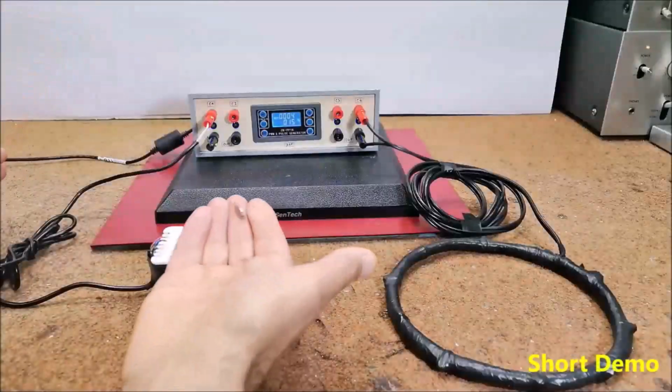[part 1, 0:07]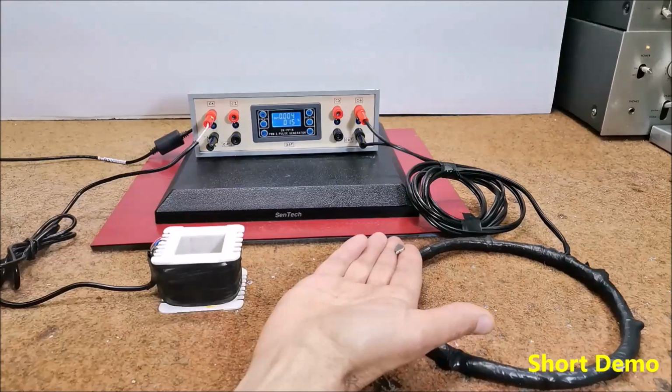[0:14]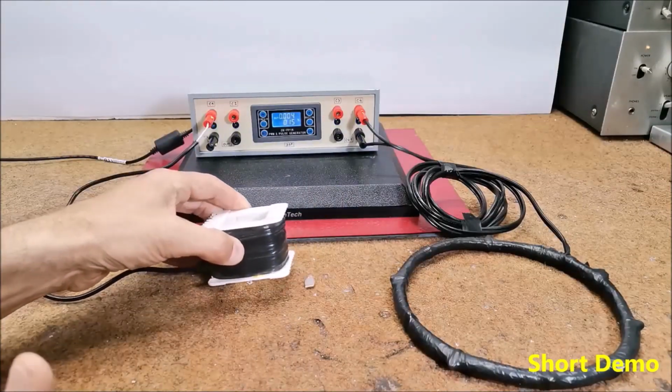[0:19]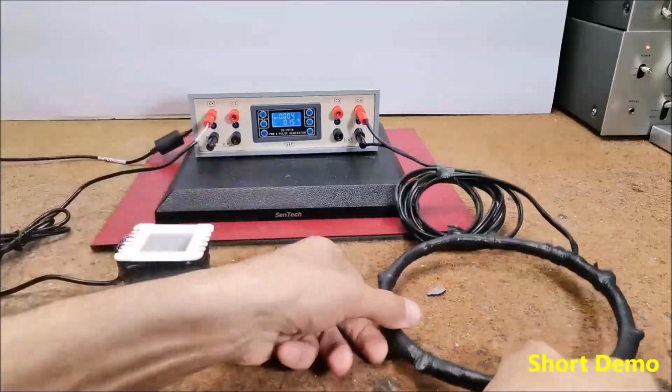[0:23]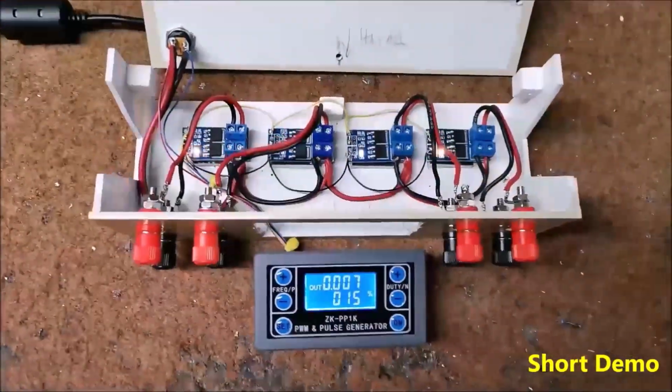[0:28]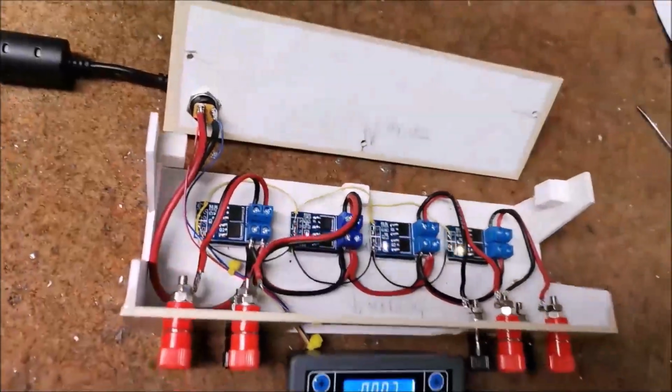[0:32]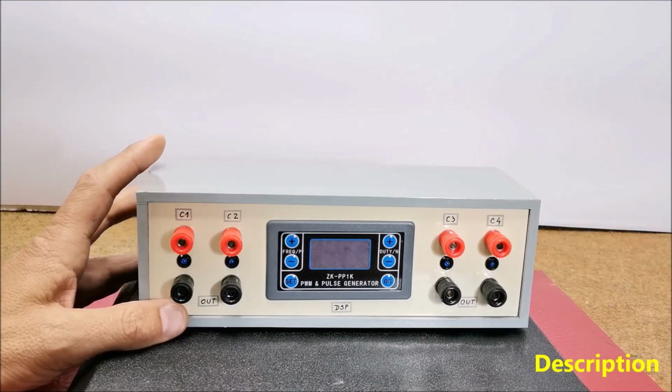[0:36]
PEMF therapy, or pulsed electromagnetic field therapy, is a type of therapy that uses electromagnetic fields to promote health and well-being. PEMF therapy is based on the idea that electromagnetic fields can influence the cells and tissues in our bodies. Exposure to these pulsating fields can stimulate cellular activity, improve circulation, reduce inflammation, and change tissue repair and support
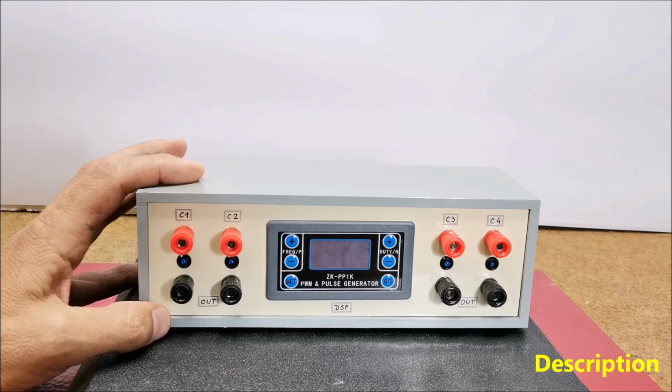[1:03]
overall healing processes. This therapy has been used for various purposes, including pain management, promoting bone healing, improving sleep quality, reducing inflammation, enhancing wound healing, reducing the effect of stress, improving blood oxygenation, and much more.
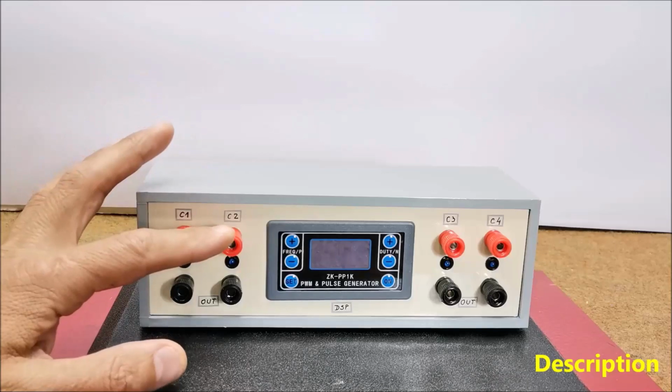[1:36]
In several of my previous videos, which you can view in the given playlist, I describe several simple ways of making such devices. This time I will describe a simple way to make a multi-channel PEMF device that is used to make a special therapeutic bed or therapeutic chair.
In this case, the coils are placed inside the mattress, usually distributed in three or four different places, so that when we lie down or sit down, the whole body is exposed to magnetic radiation.
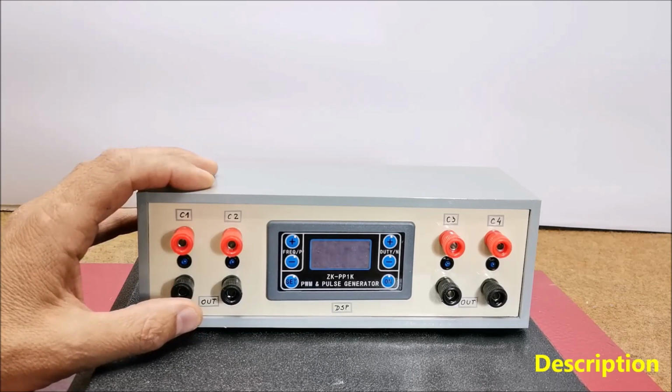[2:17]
The device is very simple to build and contains components that are easily available online and are also very inexpensive. The electronic part, without coils and power supply, costs about $10 total. I used ready-made modules for construction, so it can be made relatively easily by builders who do not have extensive knowledge in this area.
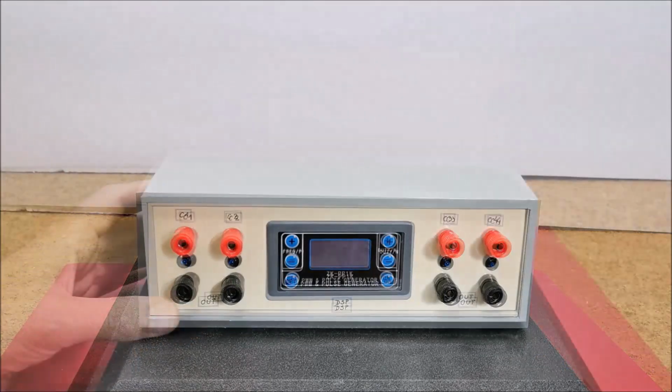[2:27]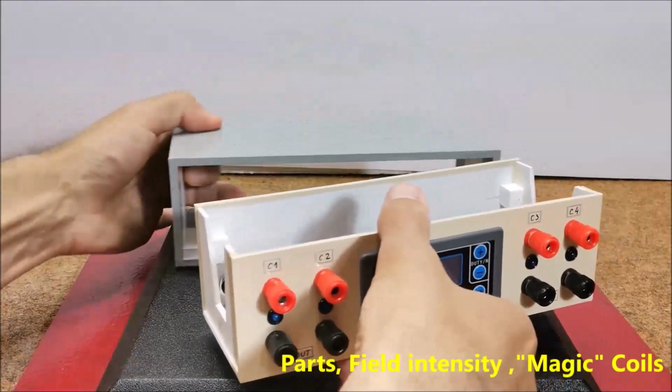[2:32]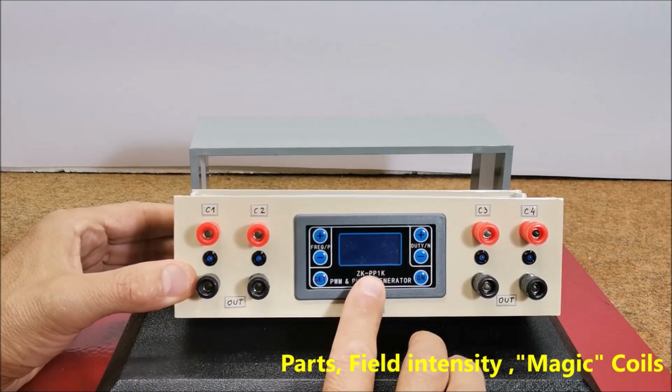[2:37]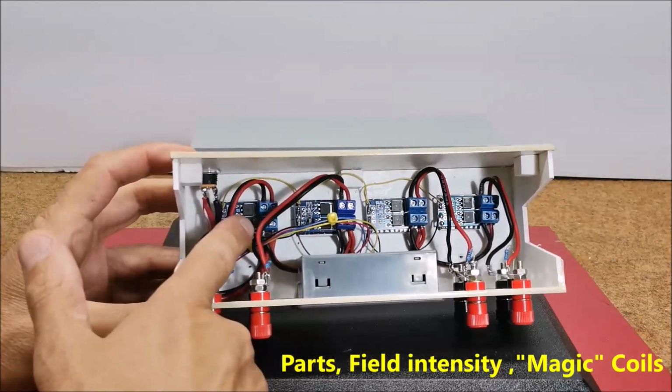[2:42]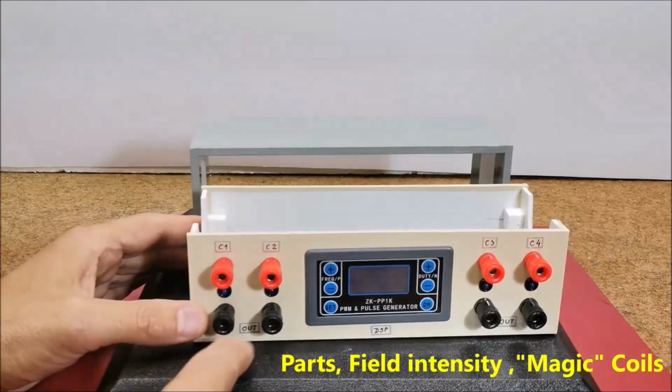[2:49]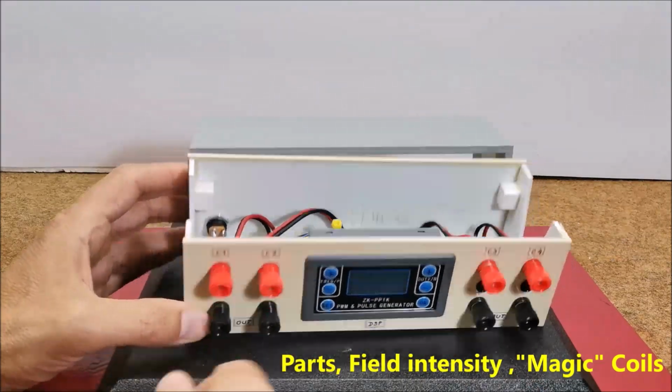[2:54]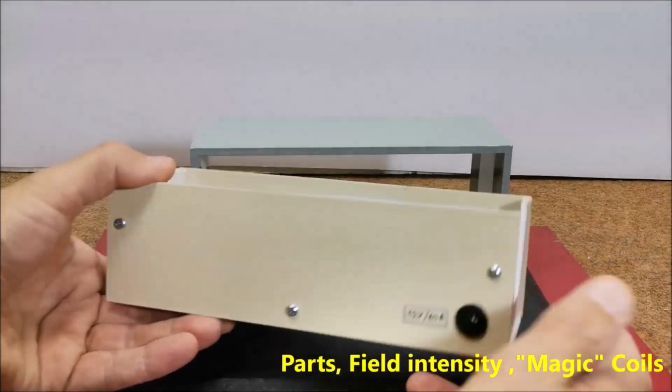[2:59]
The device contains several components. ZK-PP1K signal generator module, high power MOSFET switch driver module, one for each channel. Four coils should be connected to these outputs, and a power supply of 12 volts, minimum 10 amperes. A power supply from a PC can be used for this purpose.
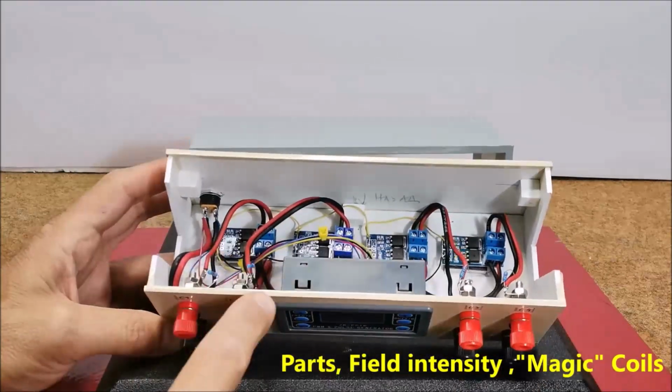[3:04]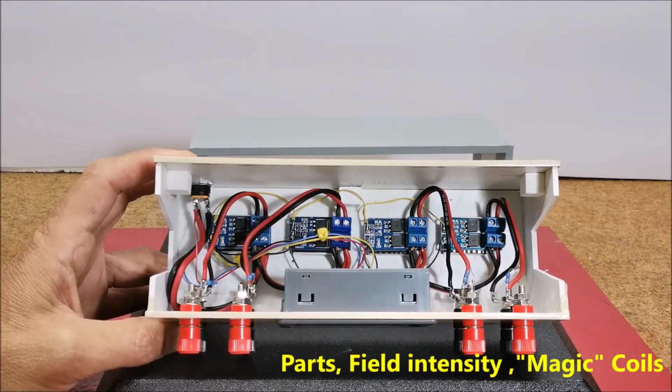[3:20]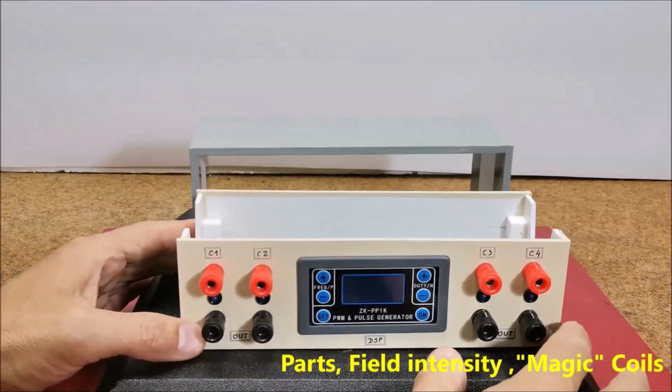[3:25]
The modules are interconnected with a conductor with a diameter of 1.5 mm or more due to the large current that passes through them, while the diameter of the wire for the pulsating signal that is brought to the inputs is not important. I'm using a 12 volt 4 ampere power supply for this demonstration because I will only connect one coil at a time. In real conditions, all four channels would be used, and it is cheaper and more practical to use a PC power supply.
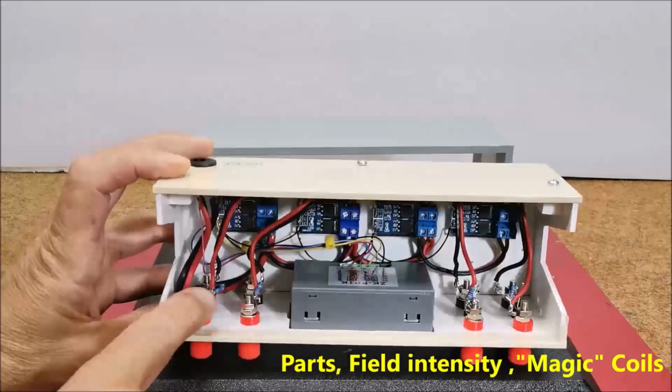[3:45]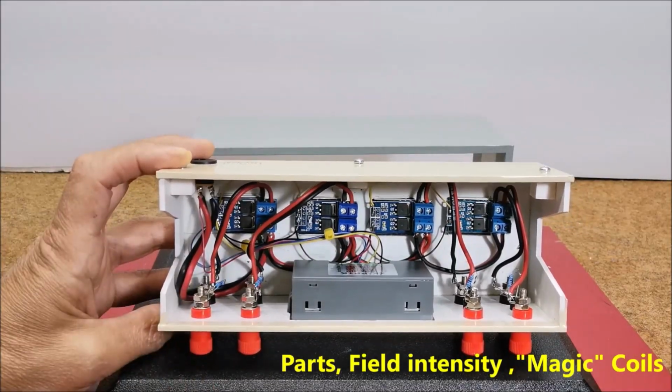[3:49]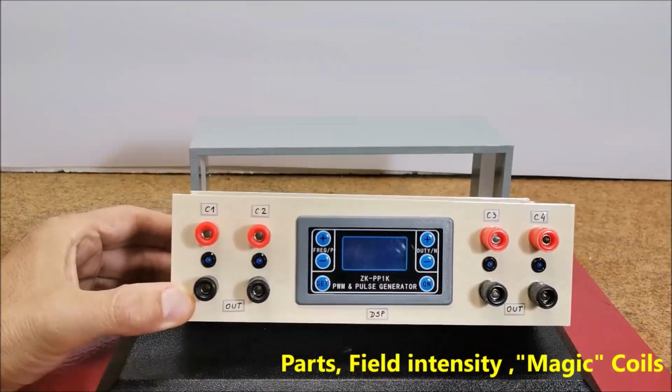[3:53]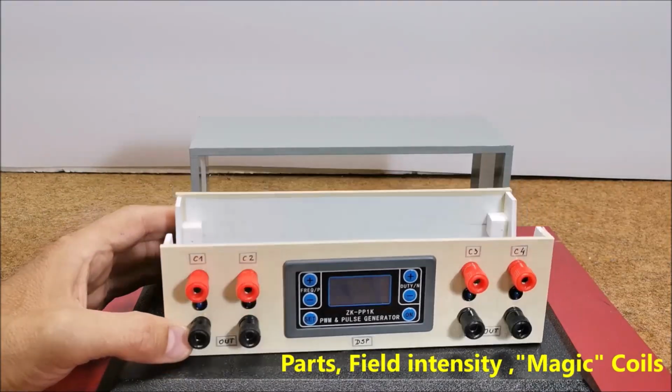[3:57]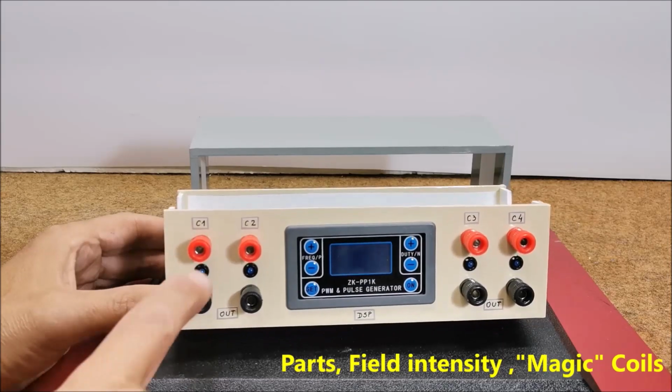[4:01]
At the output of each channel, I placed an LED diode that signals whether the channel is functioning. These diodes can be freely omitted.
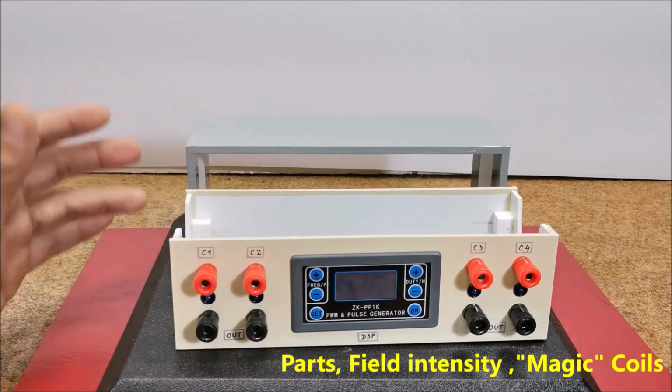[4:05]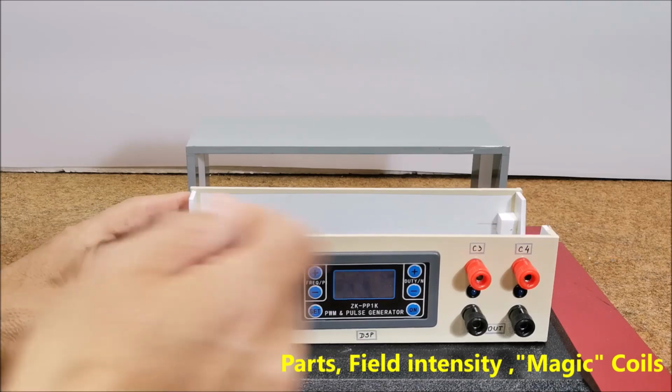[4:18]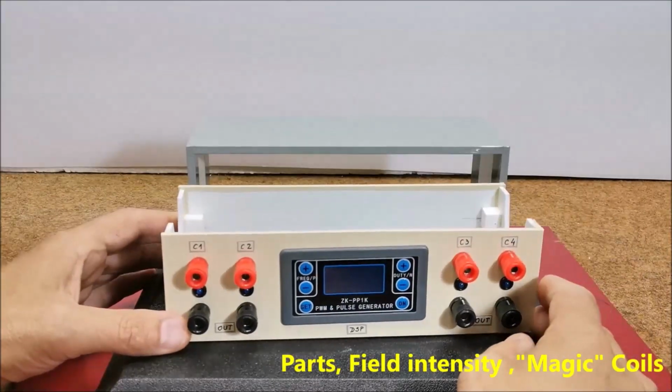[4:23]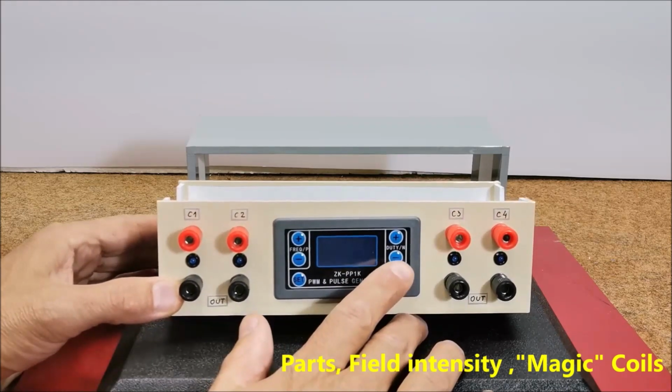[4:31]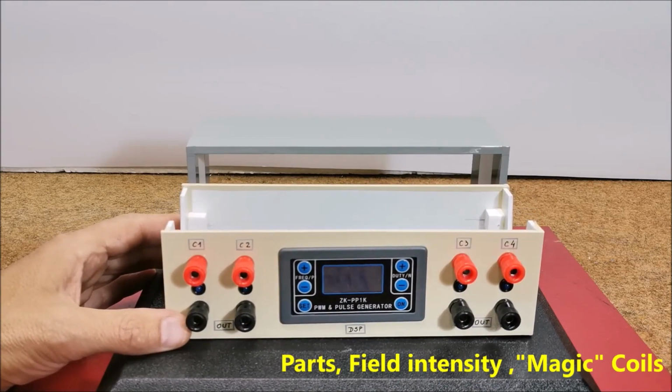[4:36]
In the appendix at the end, you can see that there are two similar circuits. In one, a potentiometer has been added, which can be used to continuously regulate the flux from zero to maximum. In my practical device, I have omitted the potentiometer for simplicity, and the intensity of the magnetic field can be partially changed by changing the duty cycle in the range of 5 to 30%. Otherwise, the standard value of the duty cycle should be around 10%.
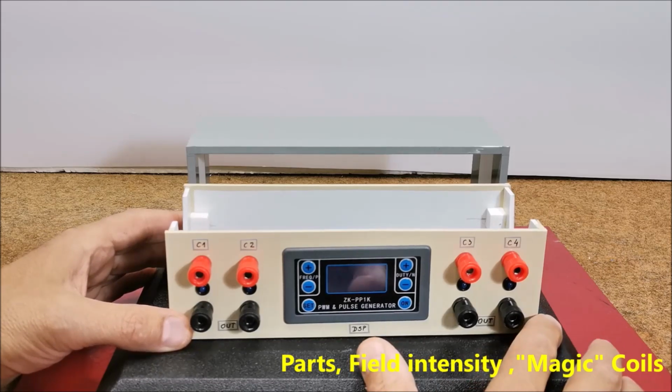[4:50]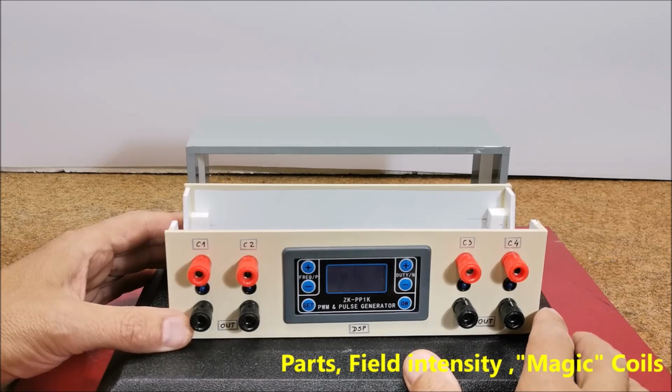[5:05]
I would like to suggest a very important note. Very often on my channel I receive requests for advice on how to make a PEMF device that would output a very strong magnetic flux of 200 Gauss and much more. According to NASA's extensive research in this therapeutic method, the best results are obtained at magnetic flux in the range of 0.1 to 4 Gauss. By increasing the strength of the flux, the effect of the therapy remains unchanged. So the rule "stronger magnetic field, stronger therapy" does not apply here. In this device, the magnetic flux strength is between 10 and 20 Gauss per channel, which is more than enough.
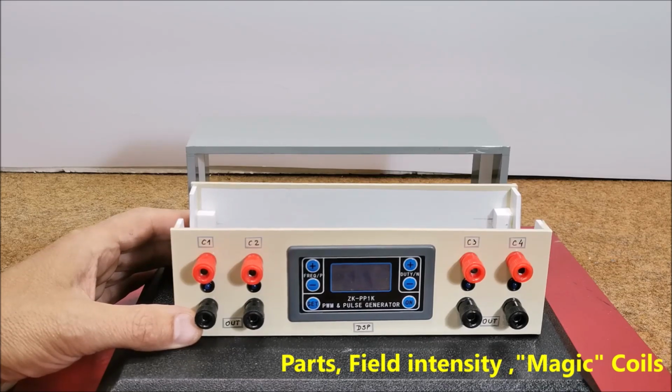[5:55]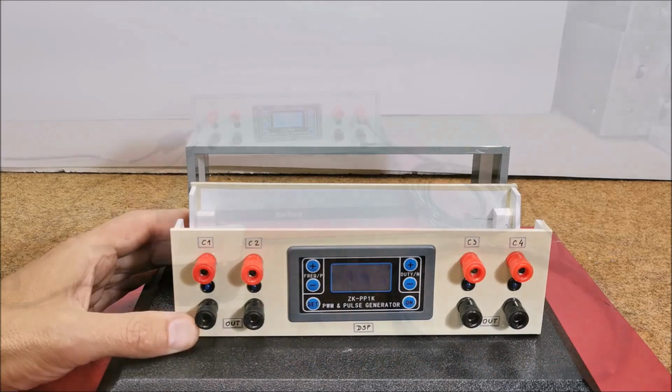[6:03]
Also, various exotic coil shapes with magical properties are definitely a scam, and avoid even reading about them at all. I still can't believe that they are sold at fantastic high prices. Unfortunately, it is a fact that there is a great demand for this type of coils, but only by people who do not understand the way this therapy works. Sellers invent countless silly theories to try to convince you of the effectiveness of their product.
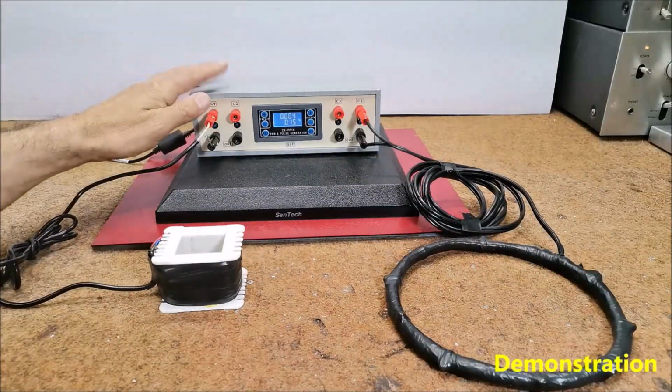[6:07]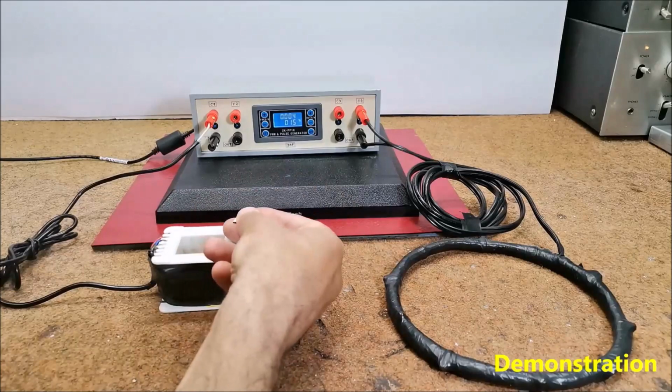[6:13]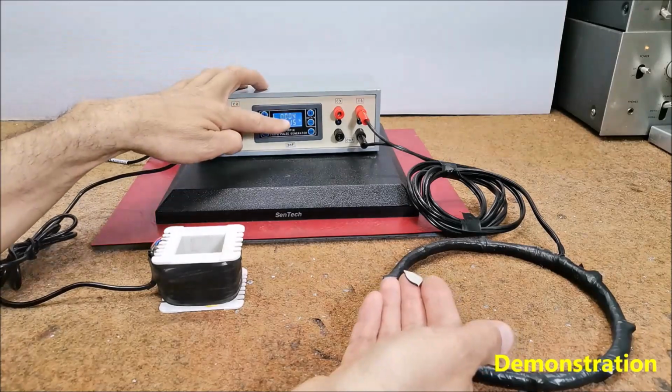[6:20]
We can test the functionality of this device, as well as other such devices, using an ordinary small magnet. If we bring the magnet closer to the coils, and if the device works, we should feel vibrations with a frequency set by the signal generator module.
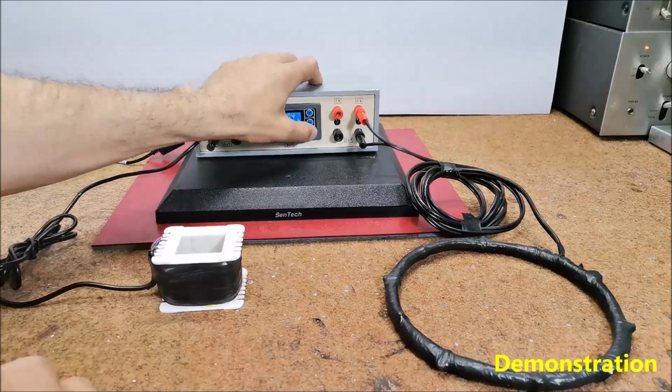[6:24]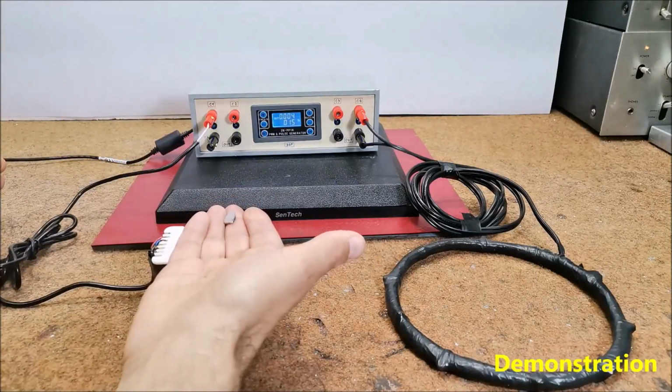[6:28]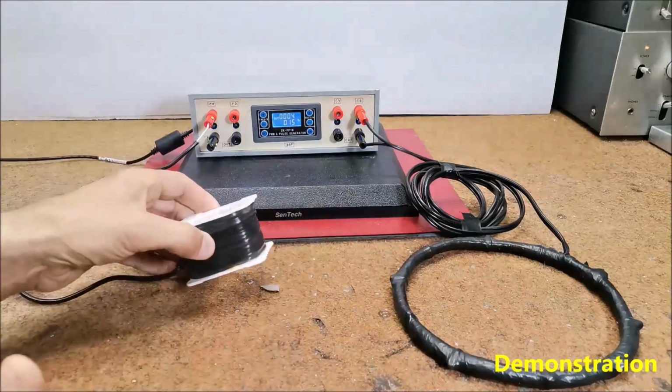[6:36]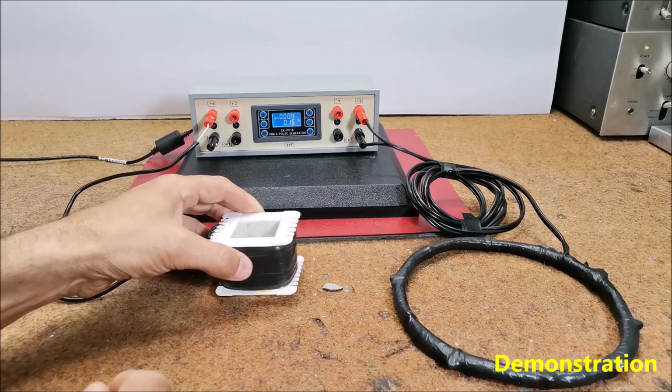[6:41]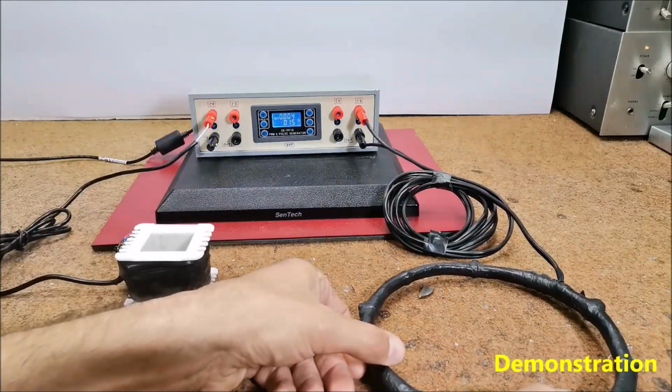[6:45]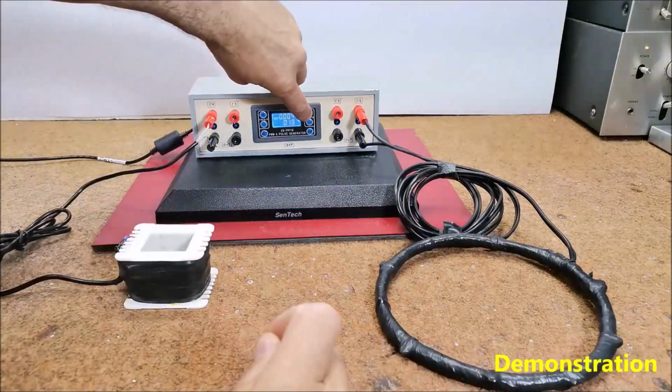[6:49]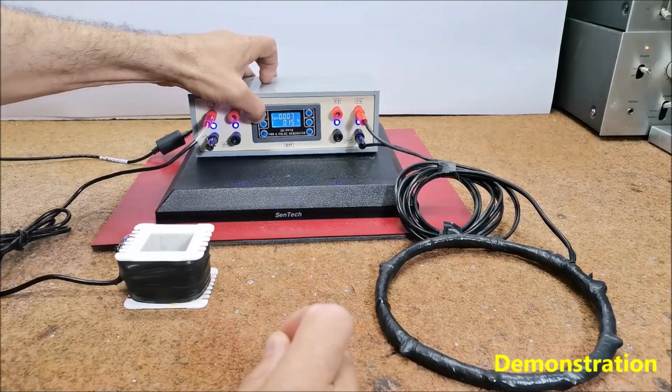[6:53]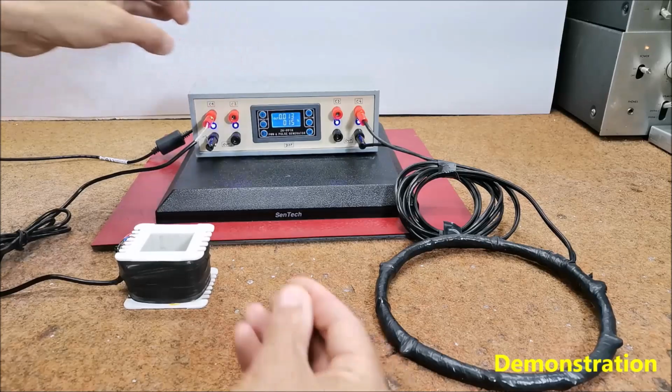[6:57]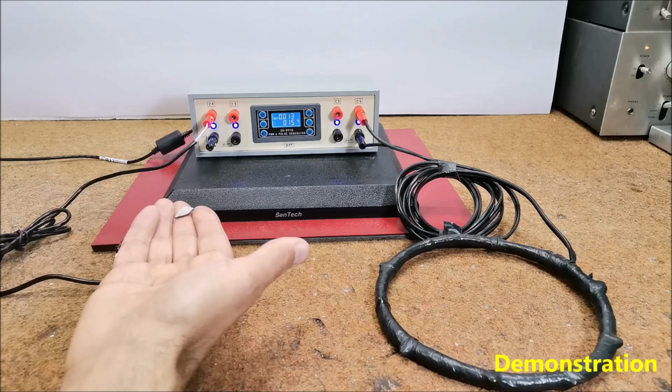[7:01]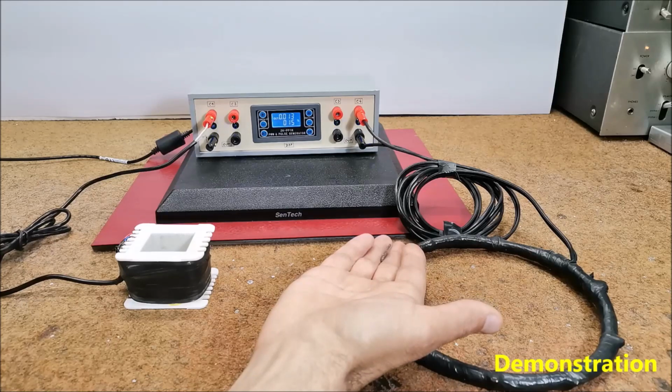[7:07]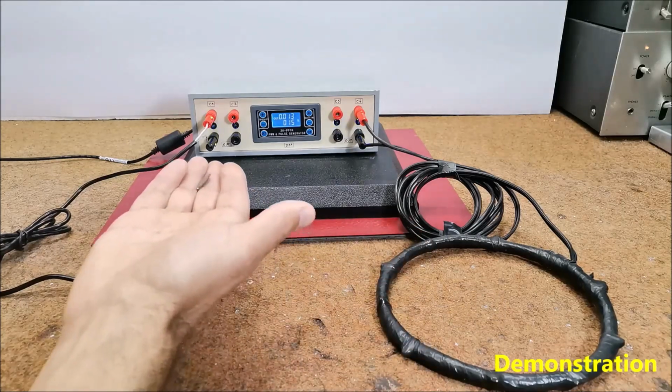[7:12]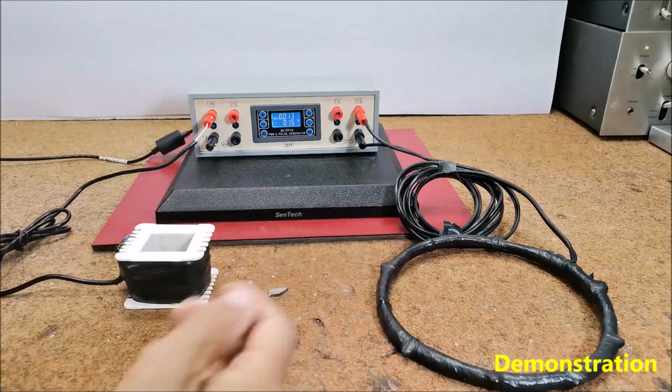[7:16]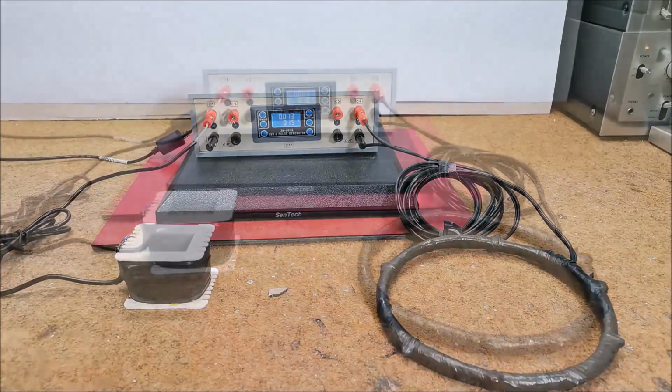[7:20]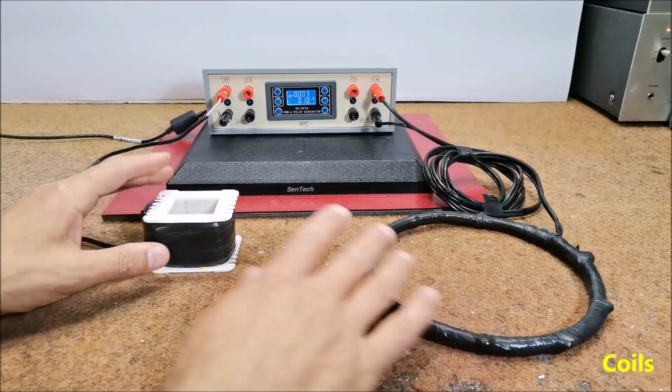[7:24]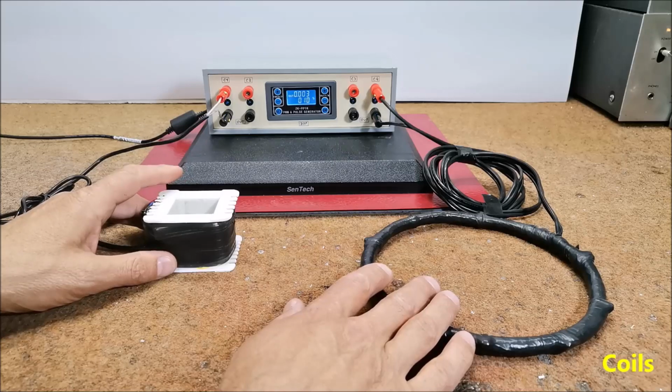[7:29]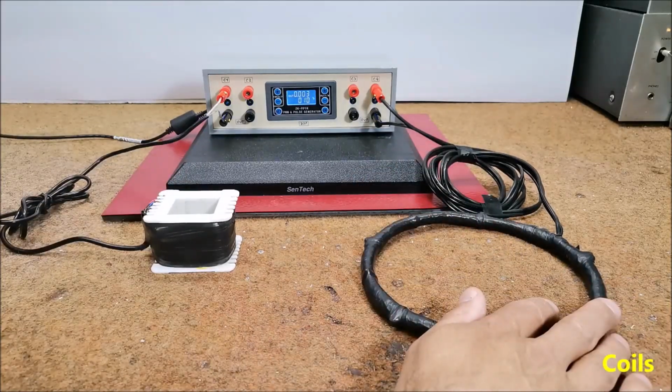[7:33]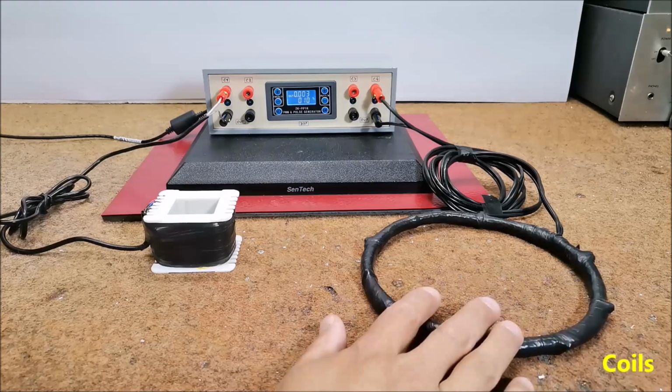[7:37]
And now a few sentences about making the coils. Coils should meet several conditions. The ohmic resistance of the coil, that is the resistance value measured with a standard ohmmeter, should be 4 ohms or more. At higher resistance, the field is weaker, and vice versa.
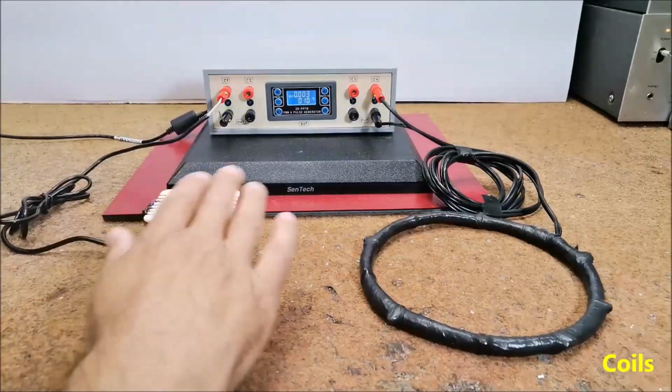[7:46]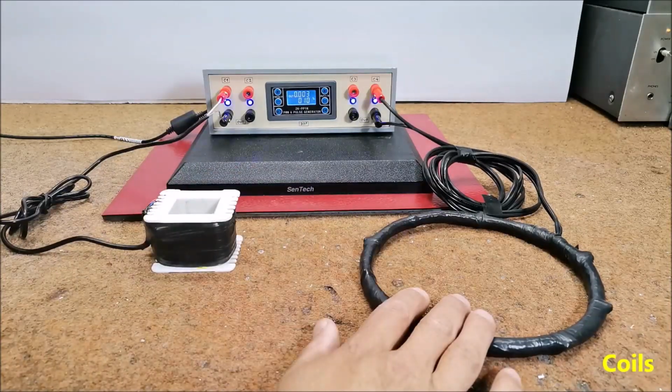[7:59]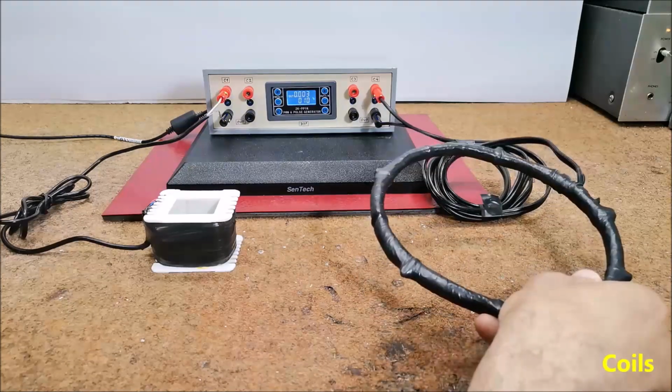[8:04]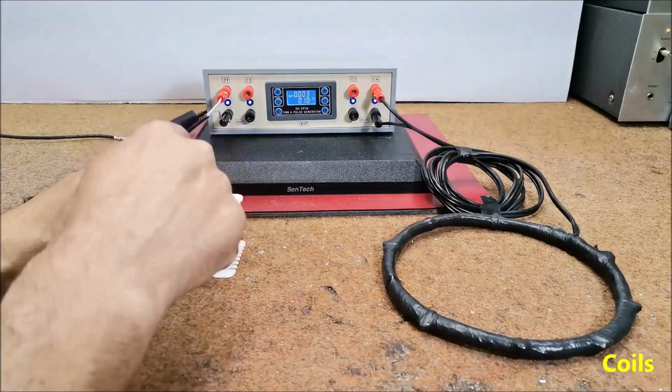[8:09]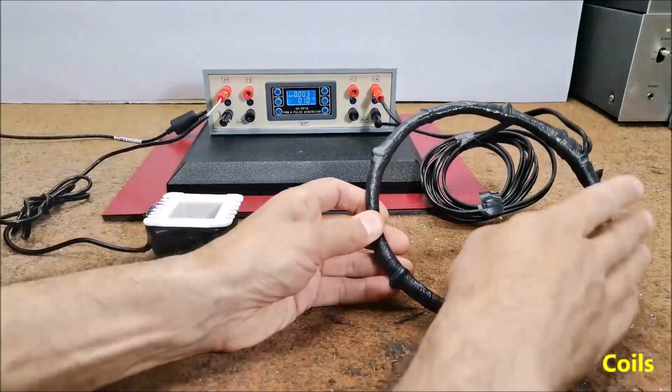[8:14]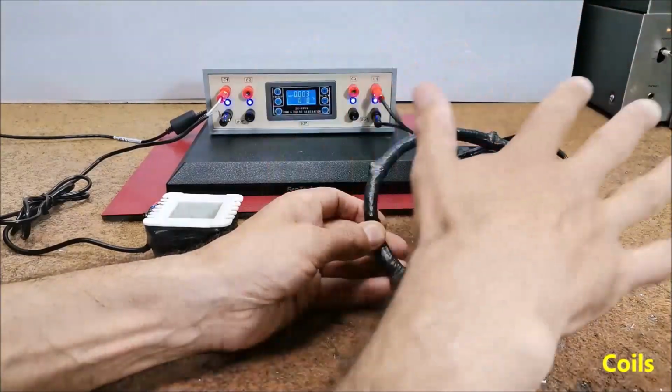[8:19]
The diameter of the wire with which the coil is wound should be greater than 0.5 mm, cross-sectional area 0.2 mm squared. The inductance of the coils is not critical and should be in the range of approximately 10 to 40 mH. The dimensions of the coils are arbitrary. A coil with a smaller diameter gives a stronger magnetic field but over a smaller area, and a coil with a larger cross-section gives a weaker magnetic field over a larger area.
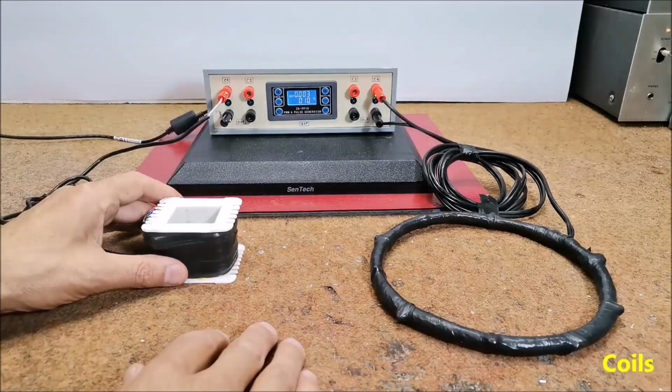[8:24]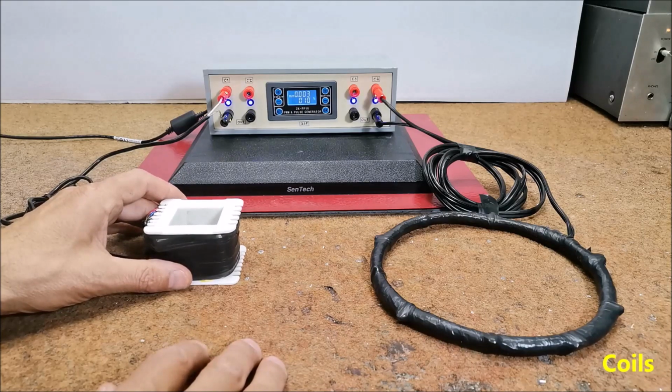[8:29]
You can easily make the necessary calculation for sizing the coil using online calculators, and for example, I use the given calculators on the web.
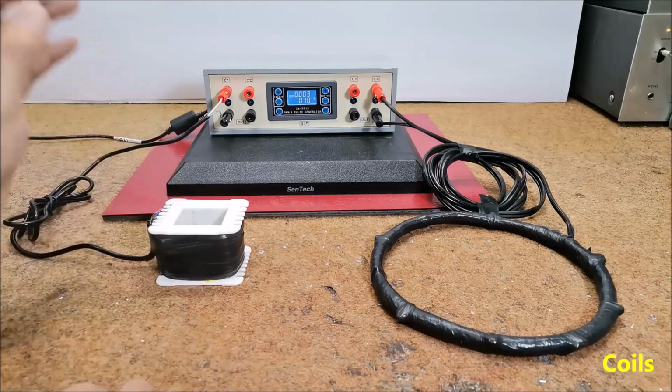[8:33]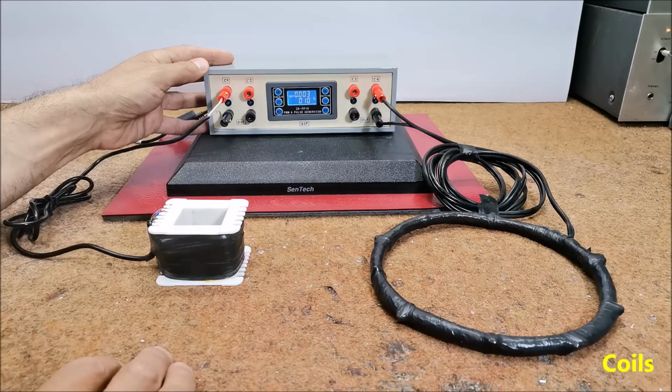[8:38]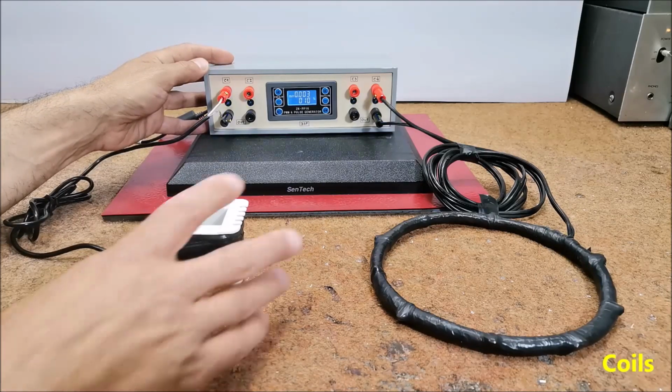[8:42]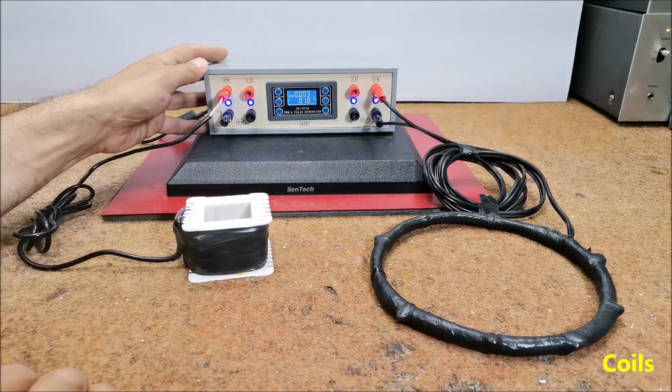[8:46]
And finally, a short conclusion. I'm not a medical person and I cannot discuss the effect of the device, although I personally have many positive experiences from using it. I can also say that low frequency magnetic fields definitely have no negative impact, except in people where it is contraindicated.
In fact, magnetic MRI imaging uses magnetic fields that are thousands of times stronger than those in PEMF, and we all know that this imaging is completely harmless. It is always advisable to consult with a healthcare professional or a qualified practitioner before starting any new therapeutic intervention.
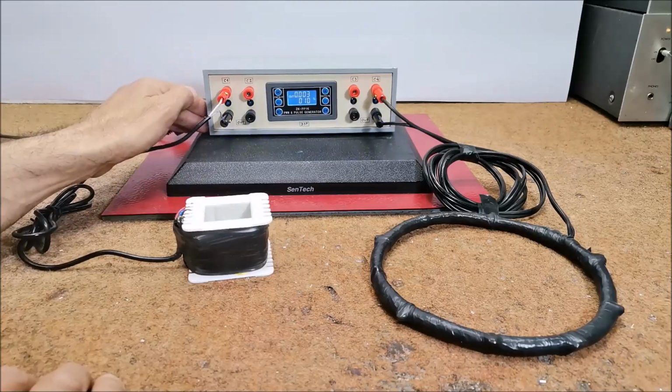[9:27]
This device is installed in a suitable box made of PVC material with a thickness of 3 to 5 mm and covered with self-adhesive wallpaper.
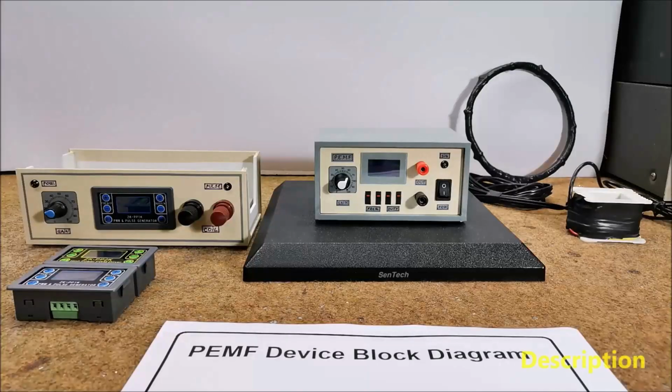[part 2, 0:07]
Hello. Pulsed electromagnetic field therapy, also known as PEMF, is a drug-free, non-invasive, pain relief alternative treatment which also promotes accelerating healing for ailments and injuries. PEMF therapy improves sleep, mental focus and the body's overall performance by helping the energy output and regeneration of the body's cells. In several of my previous videos, I describe ways to make such a device yourself.
Due to the great interest and many questions that were asked to me in the previous period, I decided to make this video in which I will try to explain the working principle and its components in a very simple way, so that those readers who only have basic technical knowledge could understand what it is about. I will also describe to you the simplest way so far to make such a device yourself and try the effects of this type of therapy.
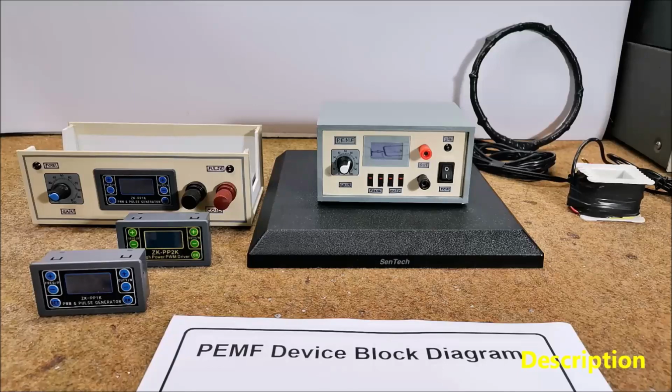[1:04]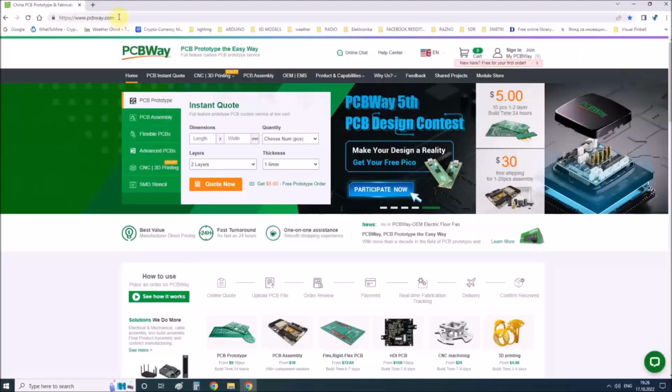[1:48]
I want to emphasize that I am not a medical person and I will not discuss the effects, although I personally have positive experiences. However, I can confirm, which is also scientifically proven, that this type of low-frequency magnetic flux therapy does not have any negative health effects, except for persons where it is contraindicated, like pregnancy, pacemakers, bleeding, active tuberculosis and malignancies. In fact, the MRI imaging uses magnetic fields that are thousands of times stronger than those at PEMF, and we all know that this imaging is completely harmless.
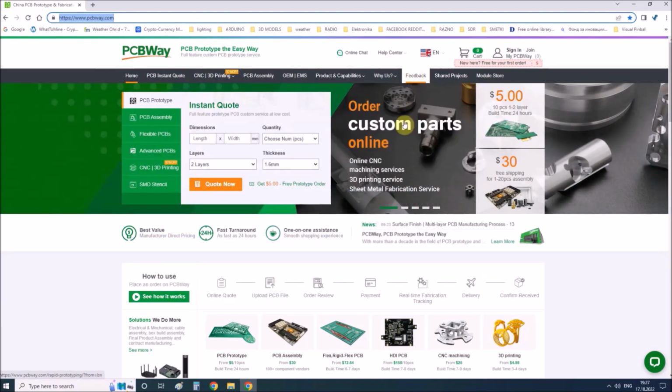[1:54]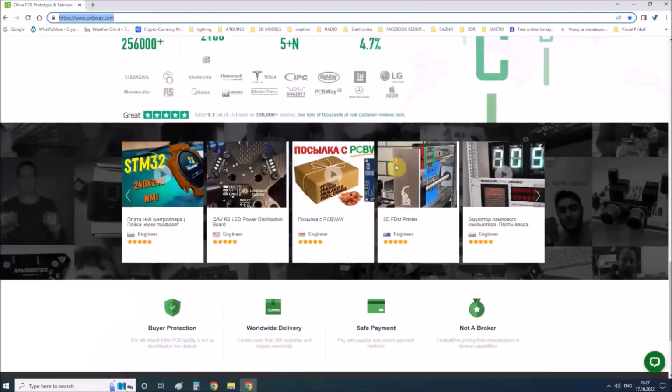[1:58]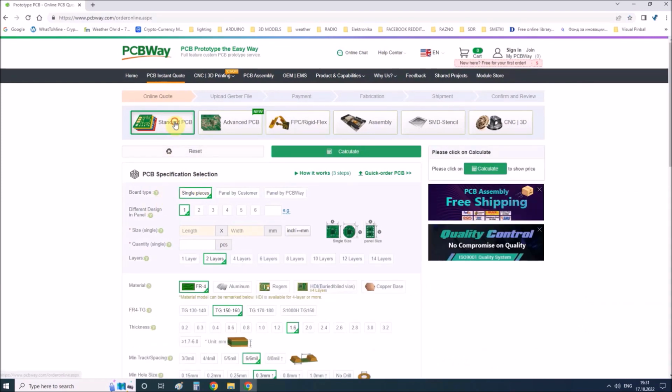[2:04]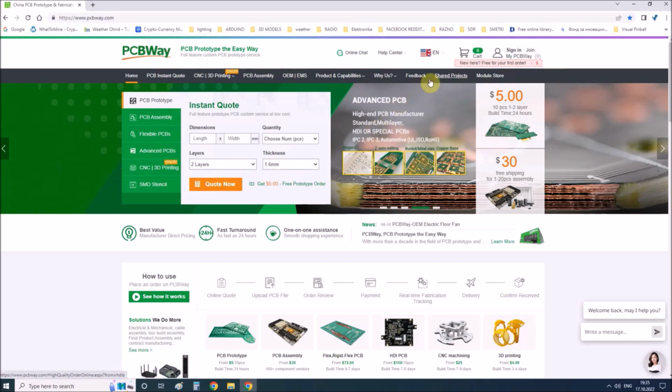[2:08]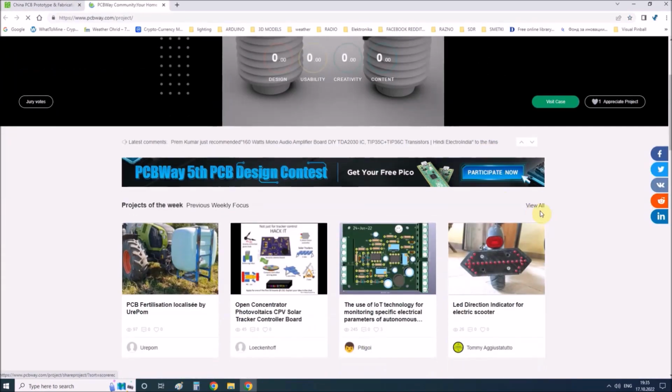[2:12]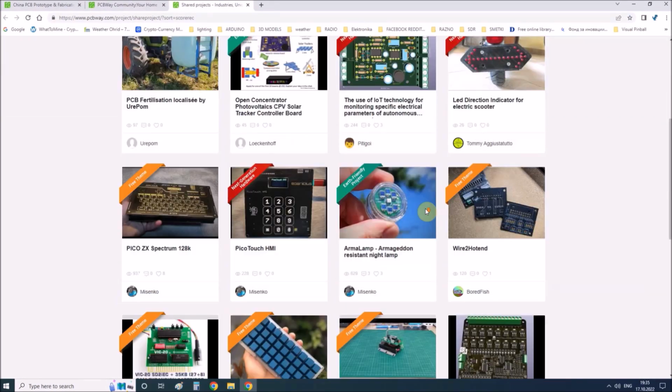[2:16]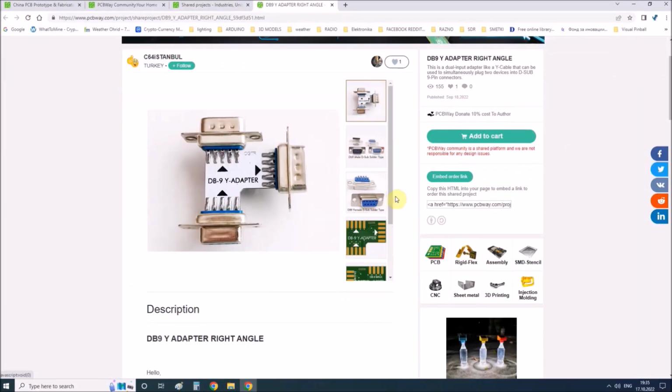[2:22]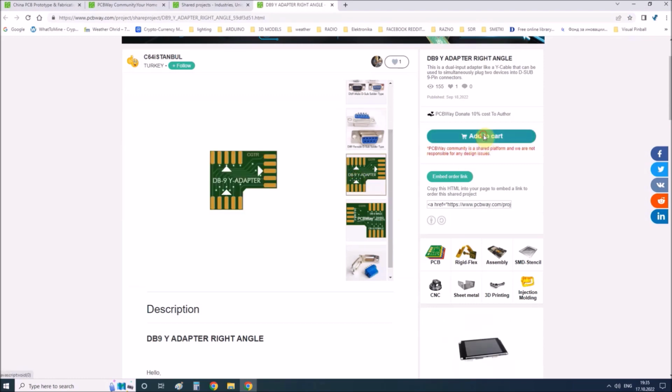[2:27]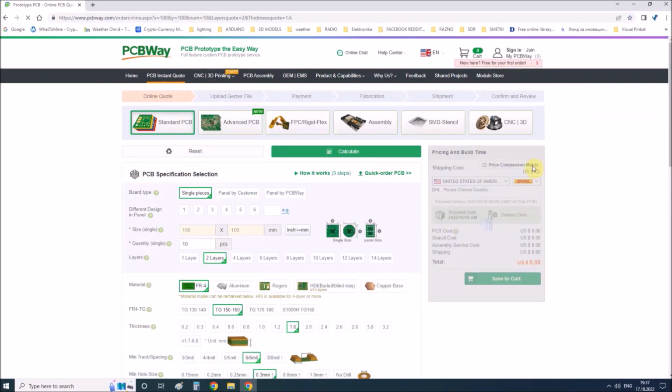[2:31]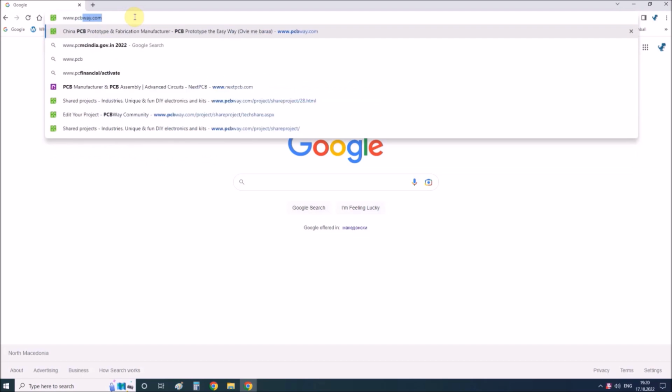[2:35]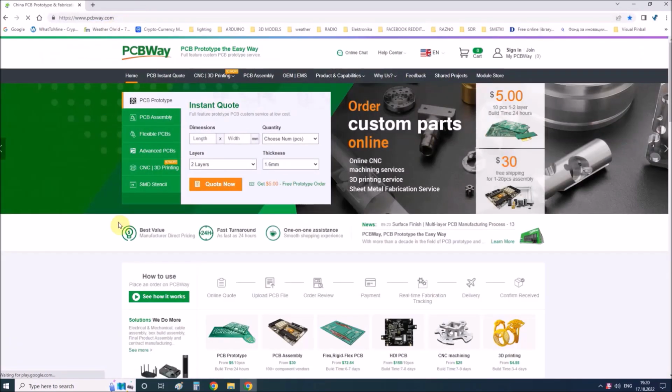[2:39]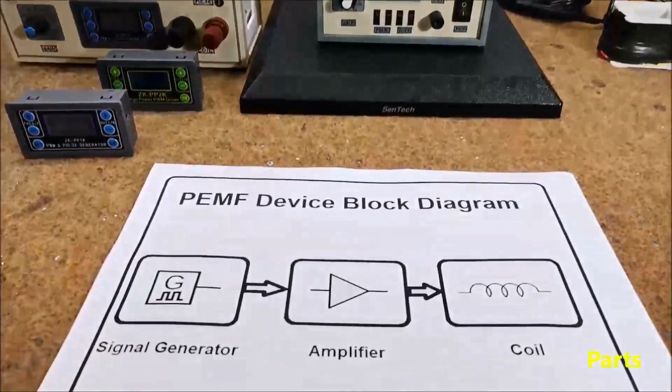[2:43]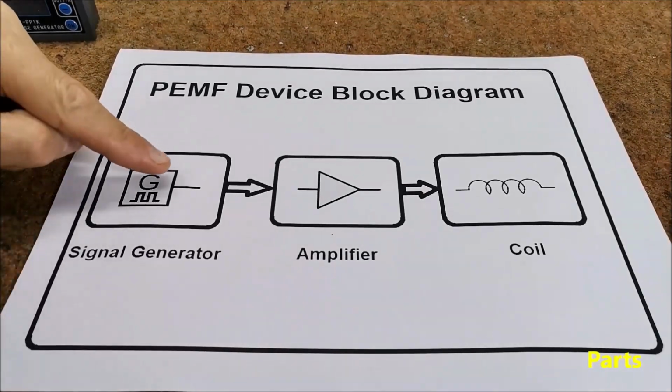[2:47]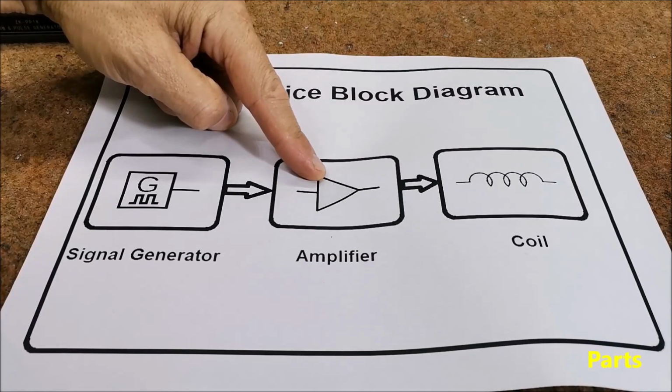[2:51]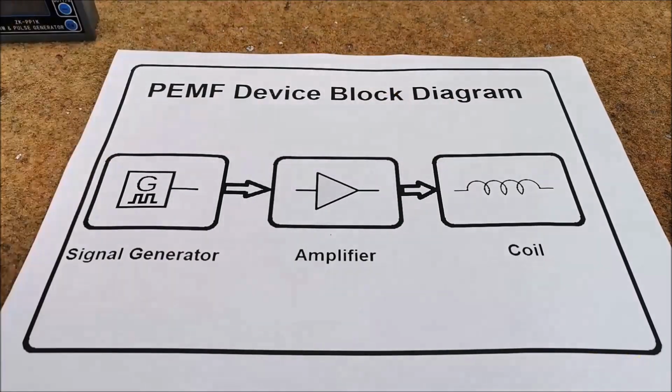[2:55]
Each PEMF device basically consists of three parts. That is signal generator, amplifier for this signal, and coil that generates the magnetic flux.
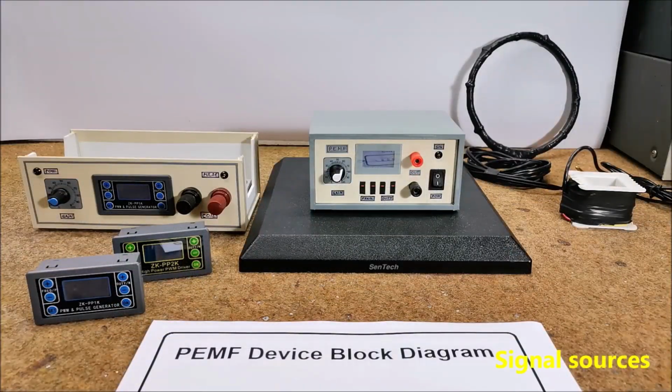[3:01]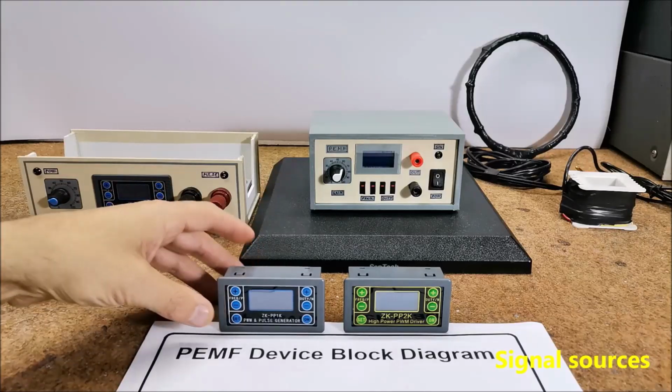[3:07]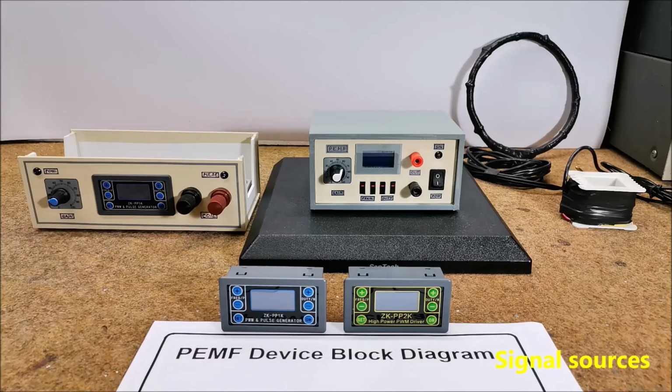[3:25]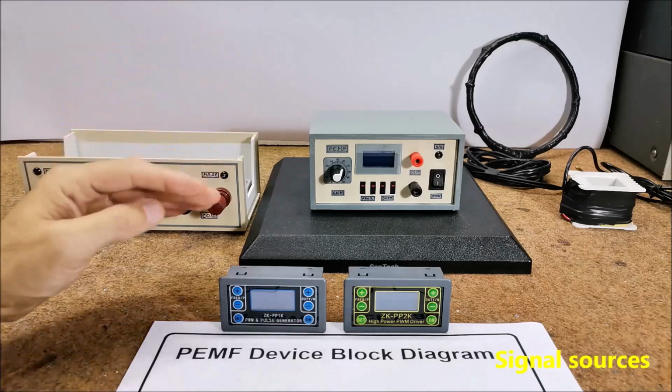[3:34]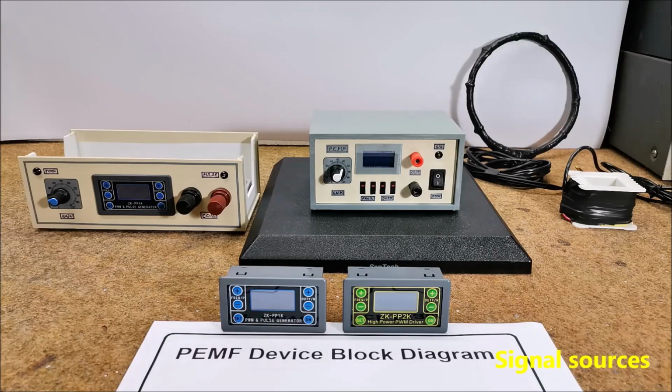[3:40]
Many devices can be used as a source of rectangular pulses. Several versions of this small signal generators can be purchased for less than $10. This is a great little device and is suitable if we have some experience building electronic devices, so we can make an independent PEMF device like this or this. In addition to selecting the frequency, we can also control the duty cycle, which should normally be around 10 to 50%.
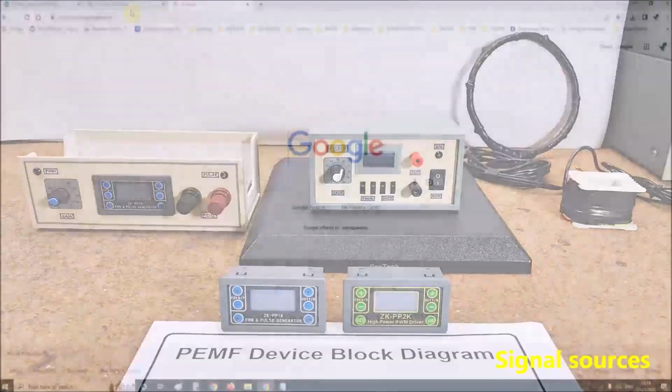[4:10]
The next option is a commercial programmable waveform generator for PEMF, which is quite expensive and not suitable for our case. One of the simpler ways is free signal generator software for Windows, on which there are many and almost all of them are free for private use. And even simpler, but with fewer options, is the possibility to use an online tone generator.
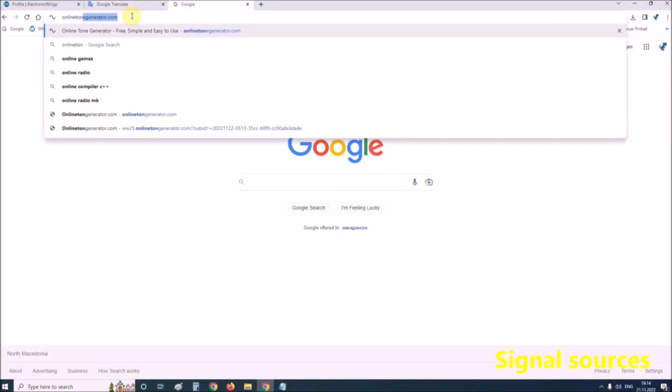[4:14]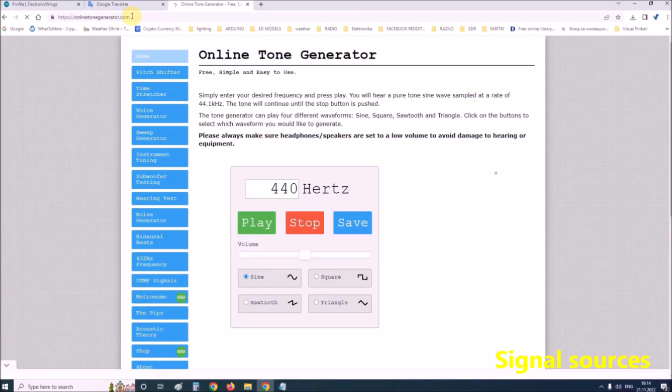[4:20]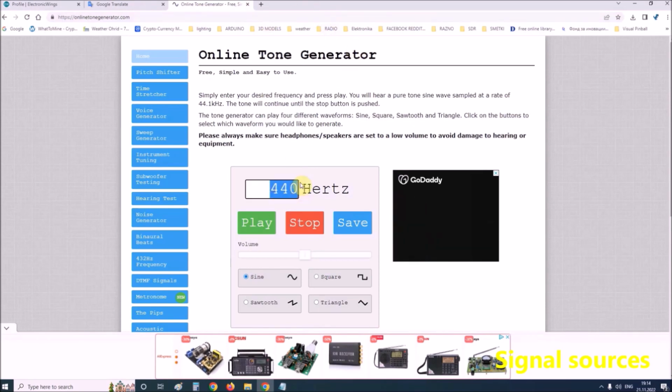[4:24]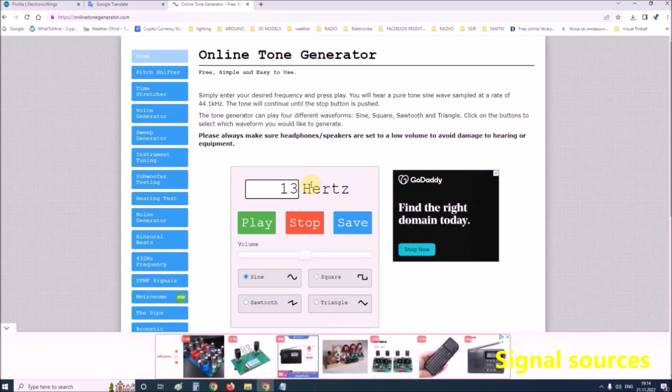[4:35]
We just need to enter the desired frequency here. For commercial PEMF devices, frequencies between 6 and 70 Hz are common. We can put 13 Hz. Then we select a type of signal, in our case square or sawtooth or triangle. We can choose square signal. And press play button.
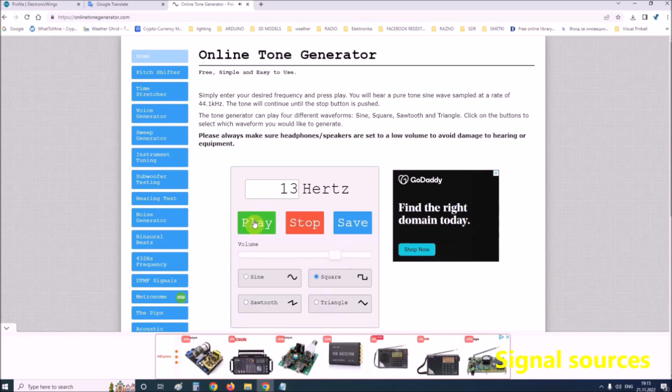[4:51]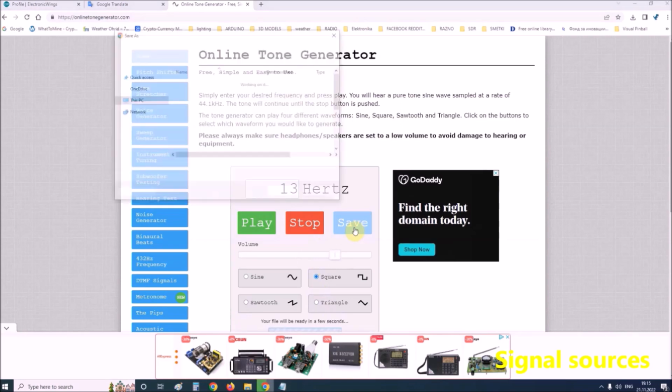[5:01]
It is interesting that we also have the option to save the given frequency in a file with a duration of 10 seconds, and then we can transfer this file to an SD card and play it through any MP3 player while we have to turn on repeat option.
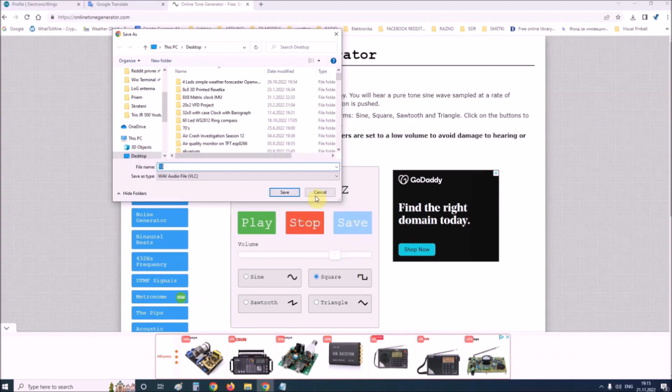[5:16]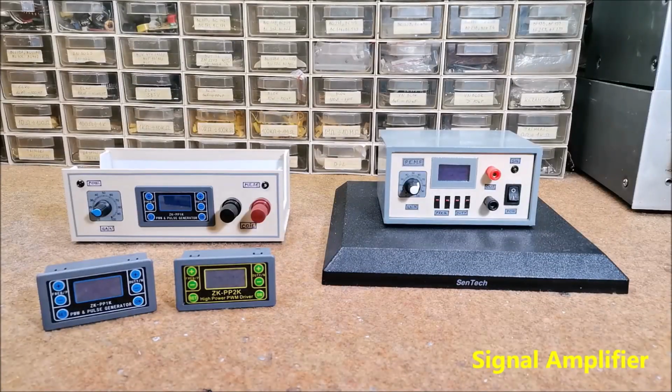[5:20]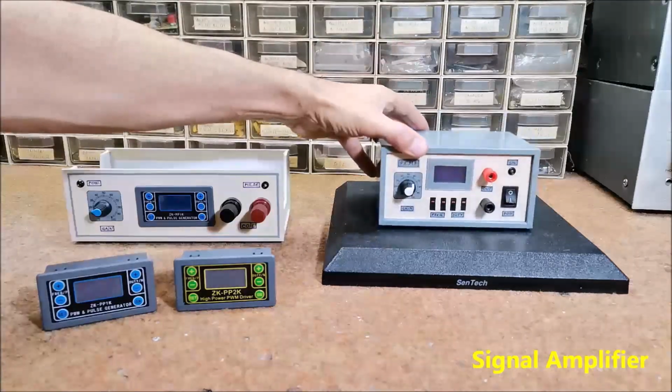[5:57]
The next part of the PEMF generator is the signal amplifier, for which we have three options. First, we can buy an audio amplifier with a power of 30 watts or more and use it only for this device, which is a relatively expensive option. The next option is if we have a home audio amplifier, we can also use it for this purpose, avoiding additional expenses. The third option comes into consideration if we have some experience in making electronic devices, and in that case, we would make one of the MOSFET amplifier that I have presented to you in my previous videos.
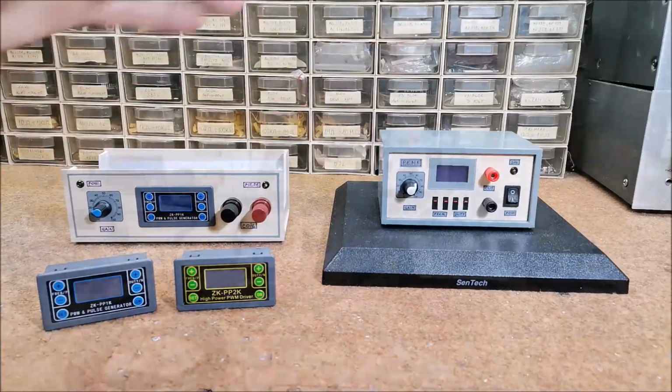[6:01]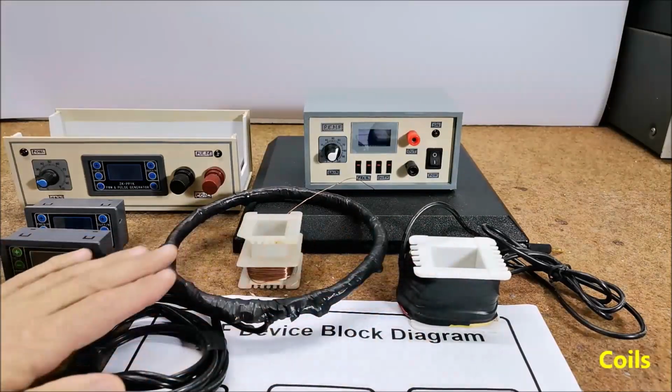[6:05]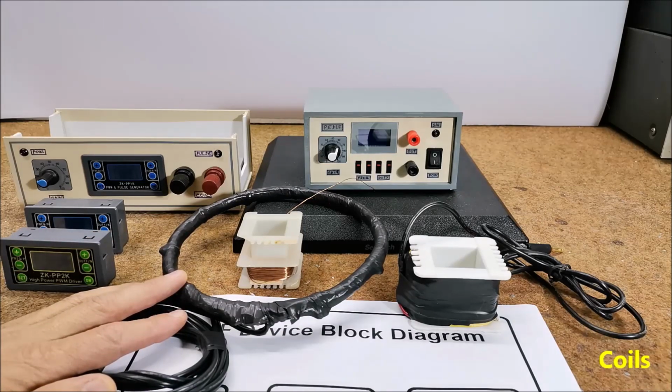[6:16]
The third part is the coil in which the magnetic flux is created, and it is usually the most difficult component to build yourself. Now I will give you some general recommendations that you will have to follow if you decide to build a coil yourself. If you think you can't make it yourself, based on these recommendations, you can order some to make it for you, of course for a reasonable price.
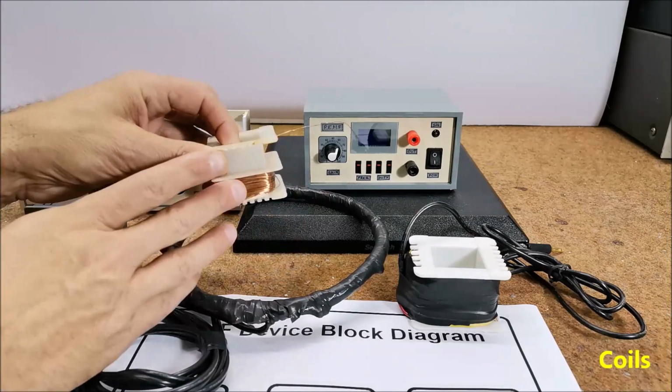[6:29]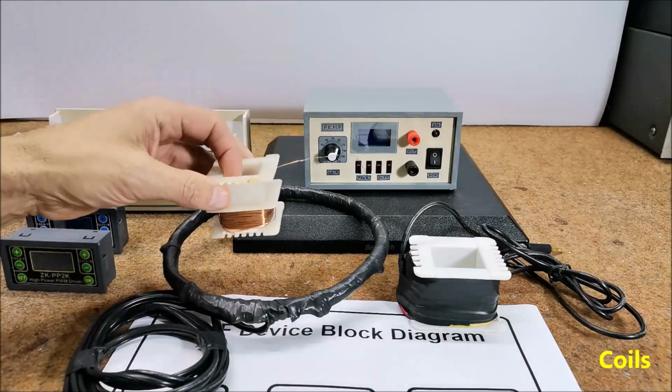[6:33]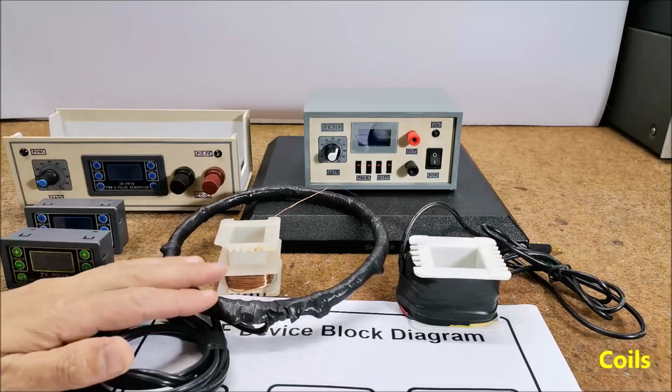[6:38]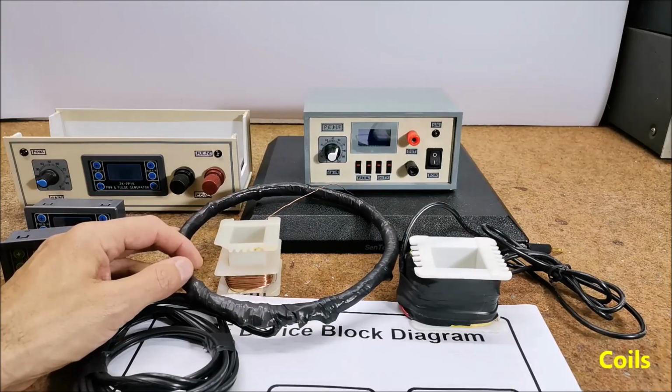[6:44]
An isolated, lacquered copper or aluminium wire should be used to make the coil. If you use a standard audio amplifier, the ohmic resistance of the coil should not be less than 3.6 ohms, and this is a basic rule to follow when making the coil.
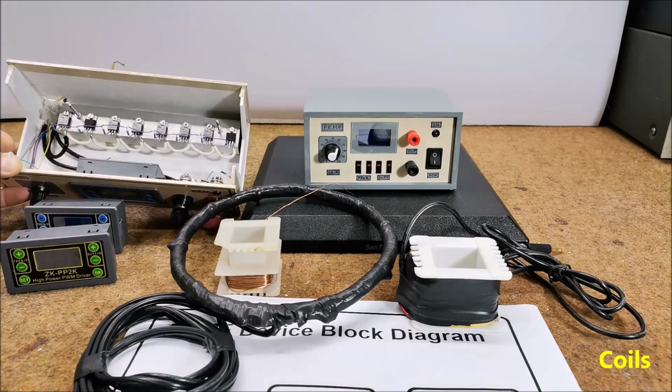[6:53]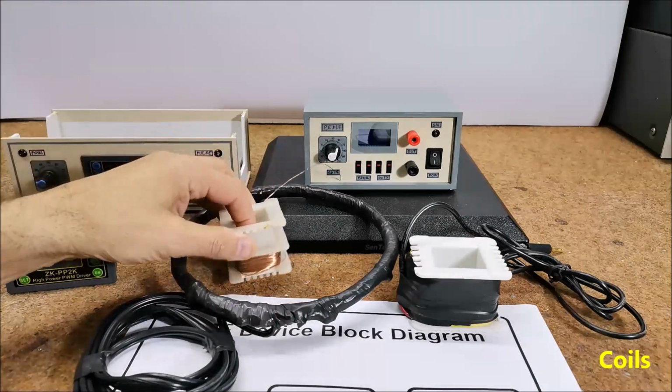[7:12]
If you use an amplifier with multiple MOSFET transistors like this, presented in one of my previous videos or similar, the ohmic resistance can go down to 0.5 ohms. The lower the resistance and consequently the larger the cross-section of the wire, the stronger the magnetic field that is radiated. Now a few words about the shape of the coil.
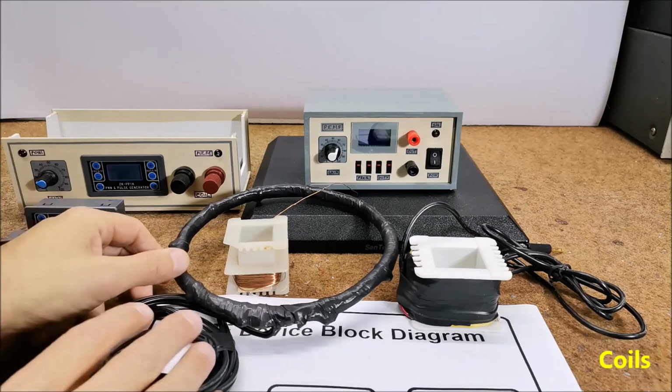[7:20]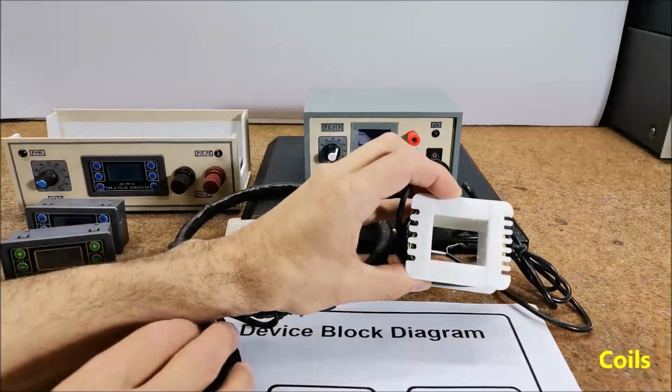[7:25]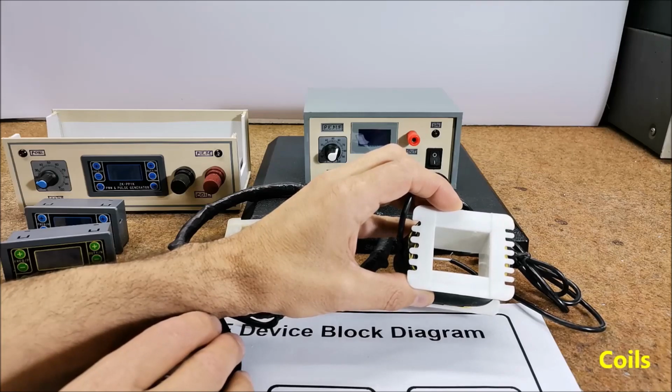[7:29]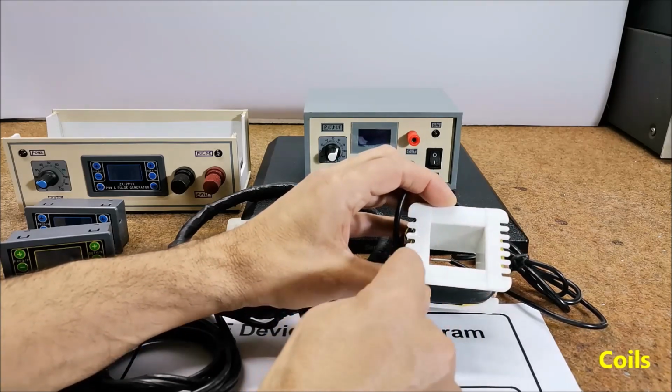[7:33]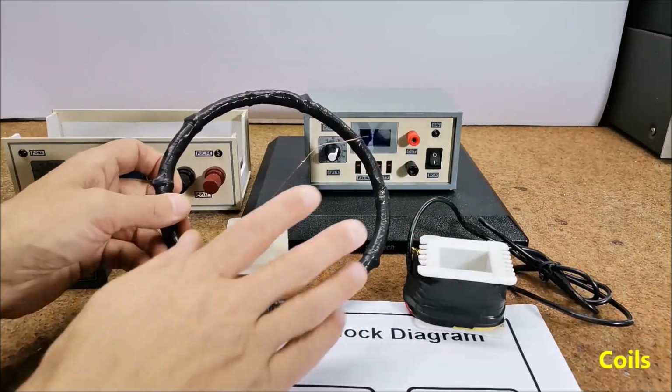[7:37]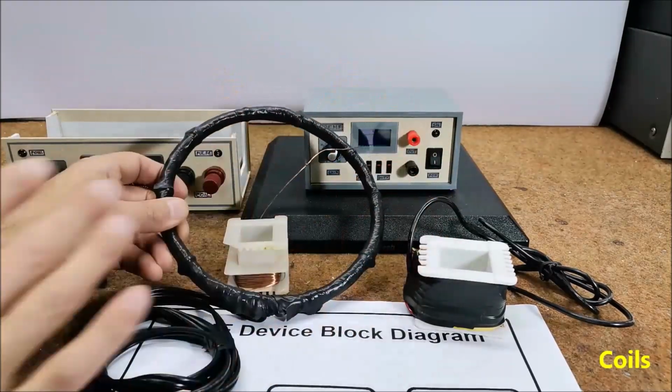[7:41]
If the diameter of the coil is smaller, like this, the magnetic flux is stronger, but the surface on which it radiates is smaller, and vice versa. If the diameter is larger, the magnetic field is weaker, but radiates on a larger surface.
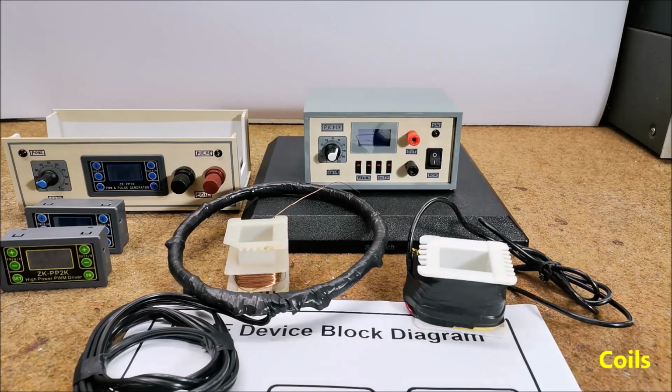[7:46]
A special case are Helmholtz coils, a pair of conducting circular coils separated by a distance equivalent to the radius of the circular loops, which produce a homogeneous magnetic field in the mean plane between the two circular coils, but they are a little more characteristic for building, and that will be discussed on another occasion.
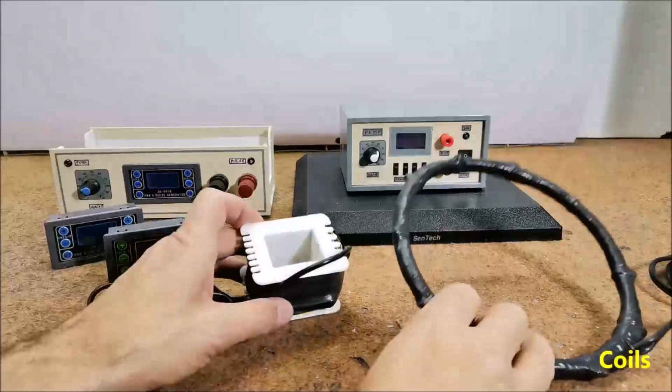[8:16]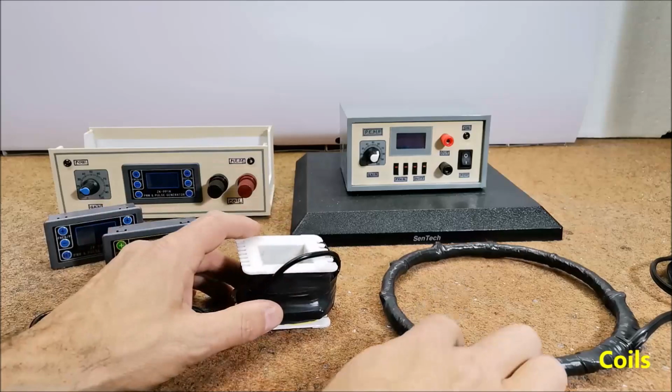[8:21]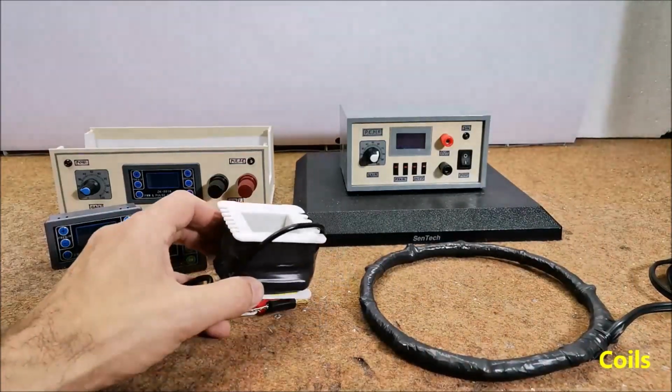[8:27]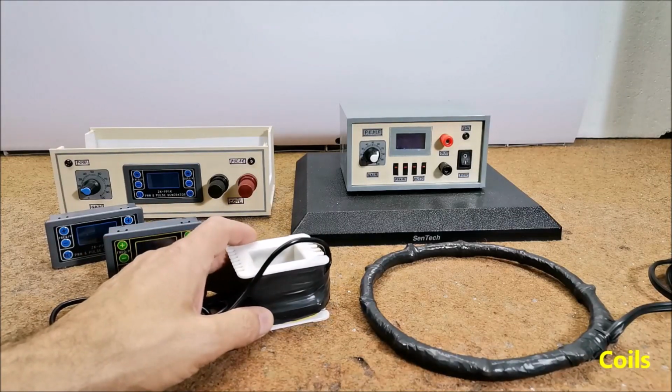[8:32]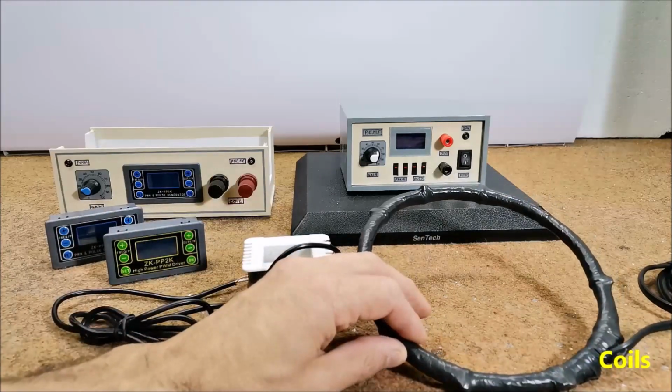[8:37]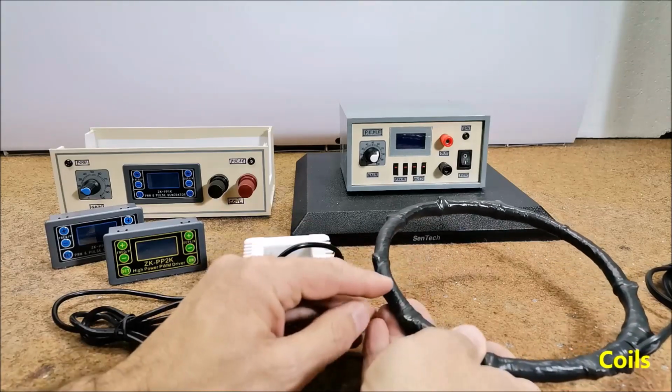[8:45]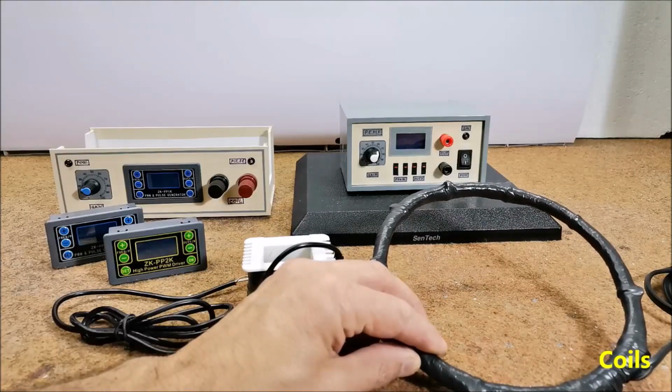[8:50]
These are ready-made coils that I had from previous projects, and they have an ohmic resistance of about 15 ohms. So the field they generate is weaker and amounts to about 5 Gauss, which is still quite enough for magnetic therapy. However, if you want to achieve a stronger magnetic field, the ohmic resistance of the coil should be about 5 ohms, at least 3.6. And with a 50 watt power amplifier, a magnetic field with a strength of 20 Gauss is obtained.
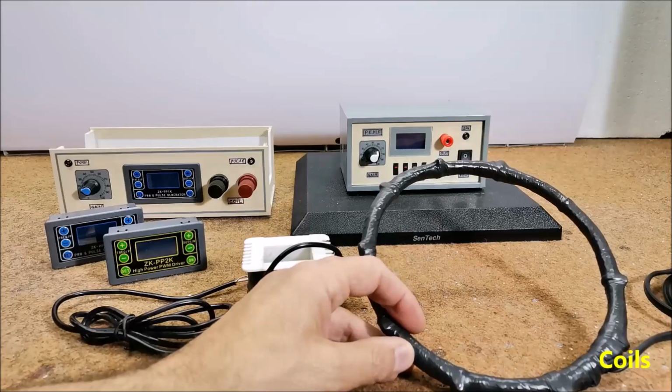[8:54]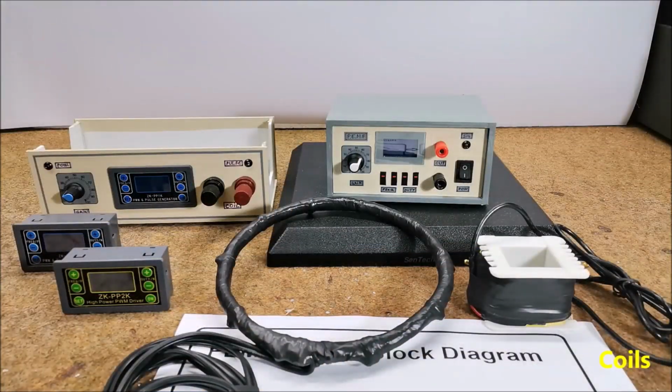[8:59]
To achieve lower resistance, the coil should be wound with a thicker wire. I would like to give you two simple examples of making a coil with materials that you can easily get or have at home.
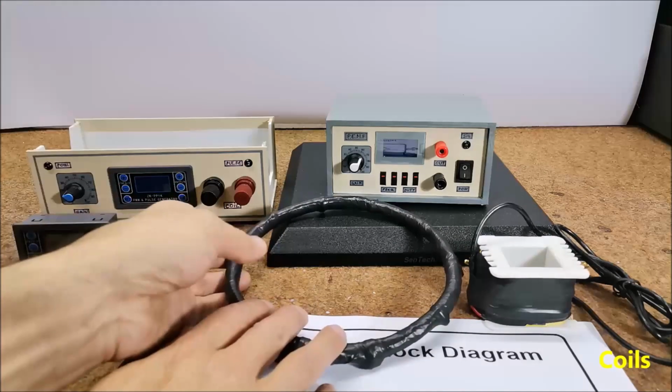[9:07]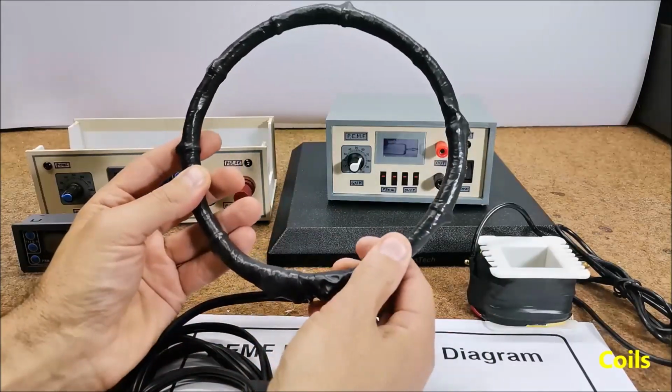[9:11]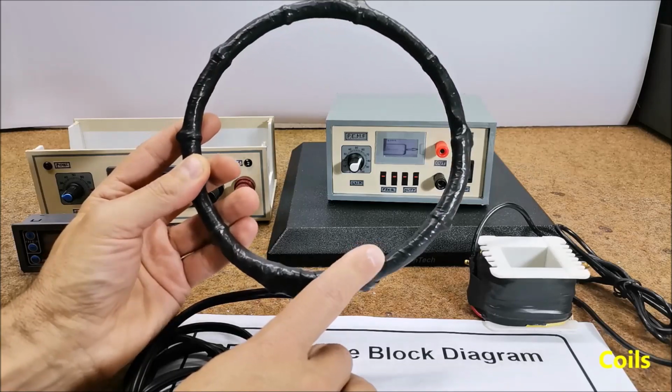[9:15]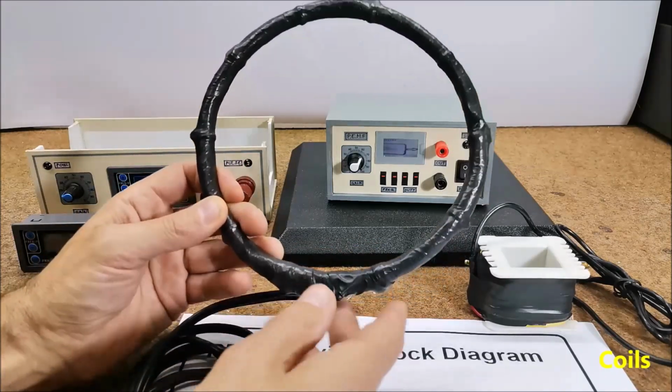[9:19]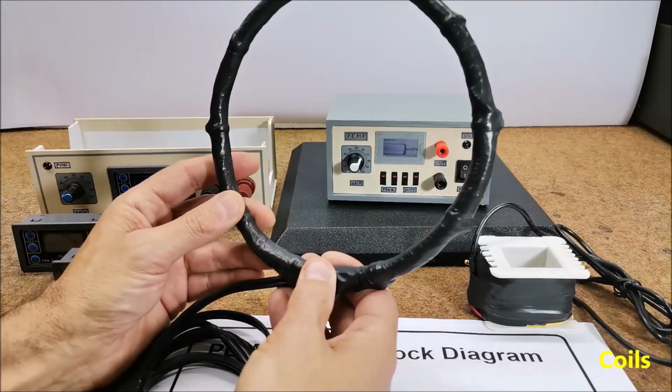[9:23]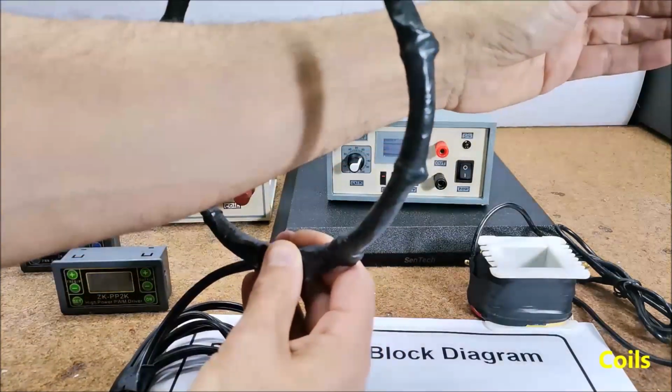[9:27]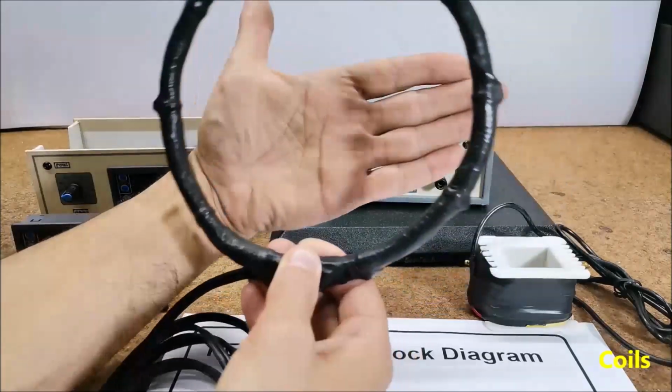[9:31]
The first coil has a diameter of about 20 cm and contains 200 windings of lacquered wire with a cross-section of 0.25 to 0.5 mm squared. This coil is practical in the sense that it can be used when threading the leg or arm, but it can also be used on any part of the body.
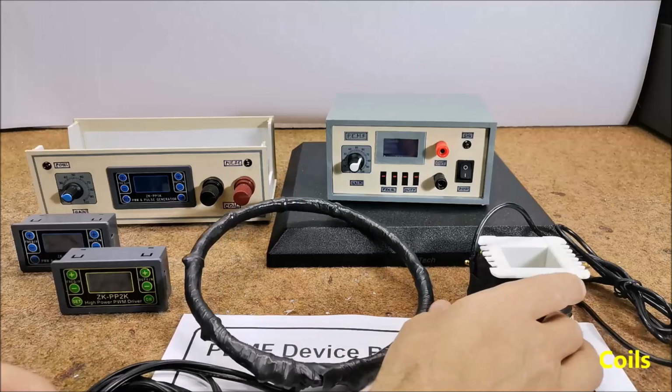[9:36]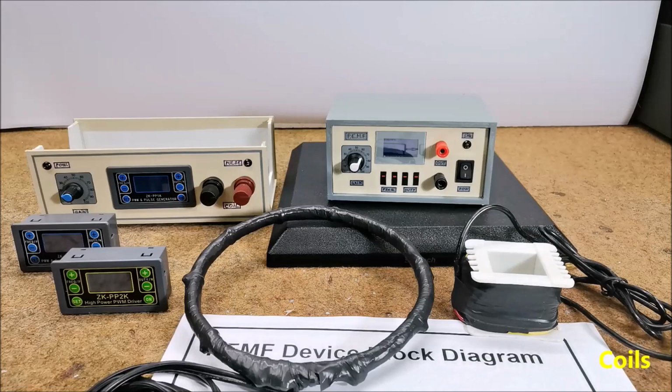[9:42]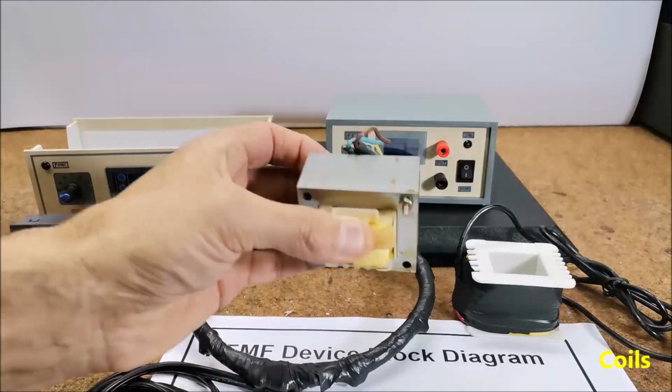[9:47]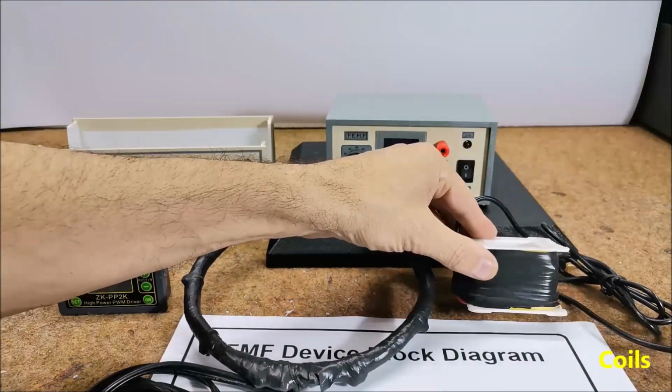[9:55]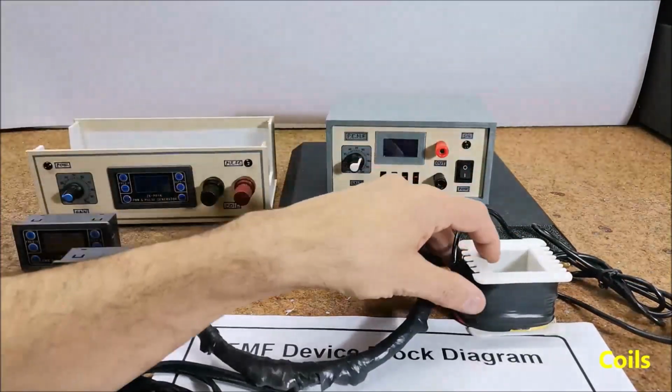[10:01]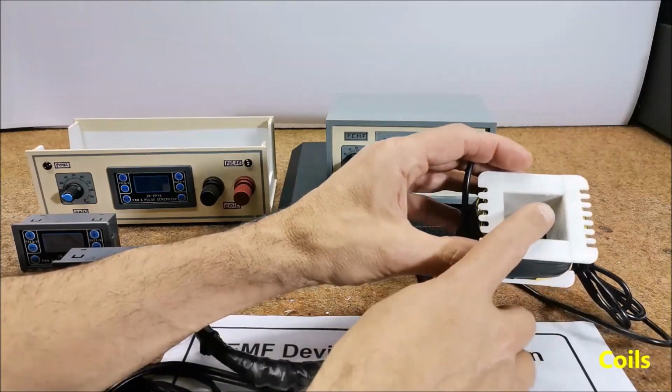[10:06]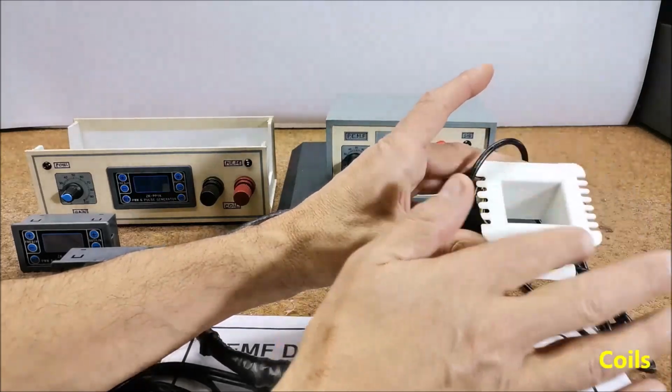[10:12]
The other example is a finished coil, and it is actually the primary winding of a transformer of 150 watts or more, like this, but bigger, with the iron part removed, and consists of about 400 turns of lacquered copper wire with a cross-section of 0.35 mm squared. The magnetic field of this type of coil is stronger in the middle of the coil than in the previous case and penetrates a greater distance, but therefore occupies a smaller area.
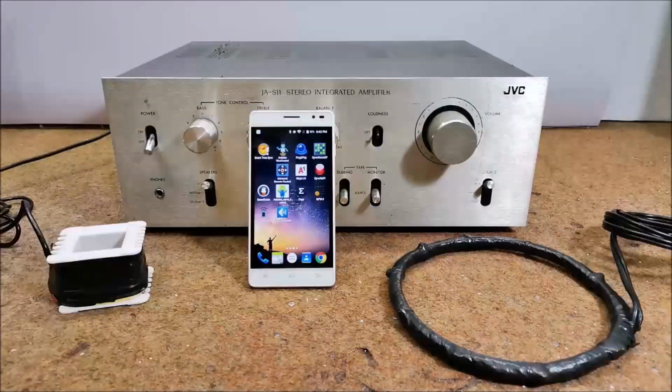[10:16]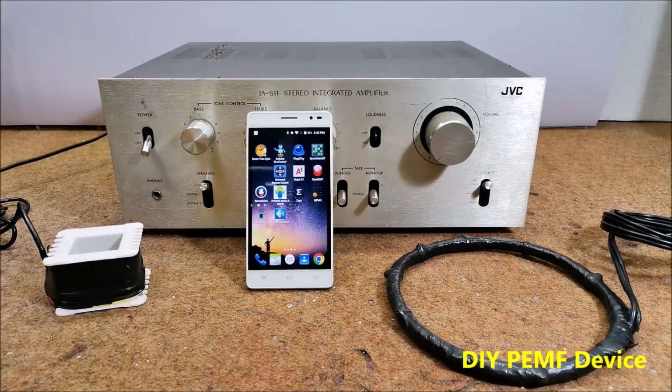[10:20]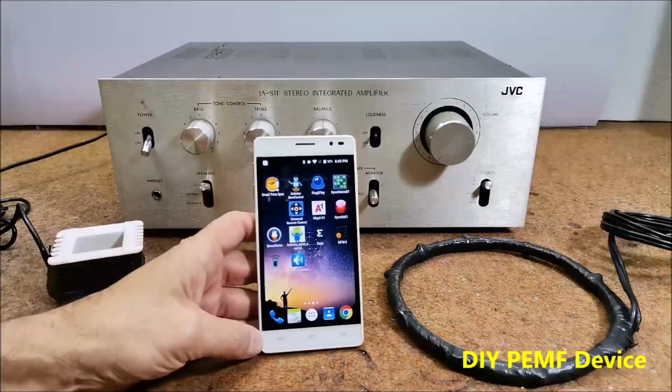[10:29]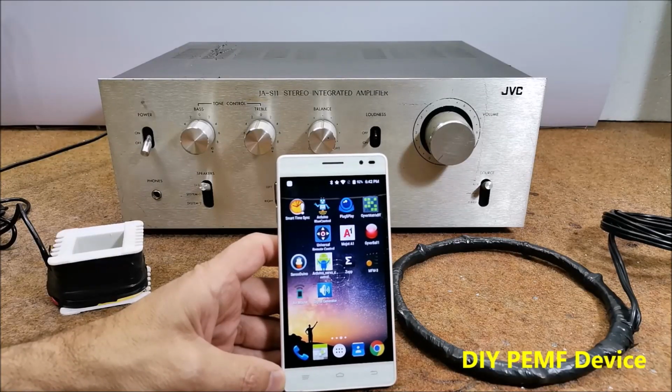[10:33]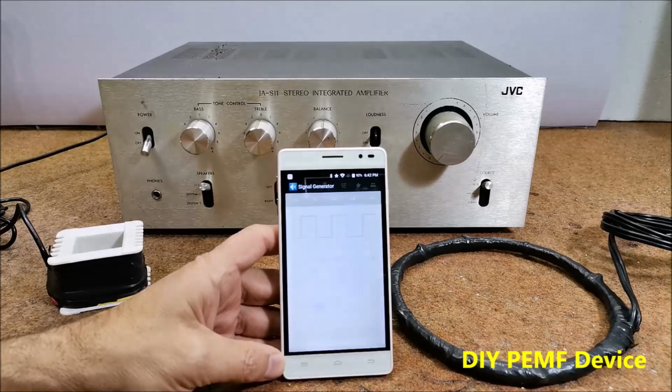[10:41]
In the following, I will show you how to make the simplest PEMF device at home using materials that can be found very easily. The signal generator function is taken over by any smartphone, which I hope you all have at hand. It is only necessary to install the previously mentioned free signal generator application.
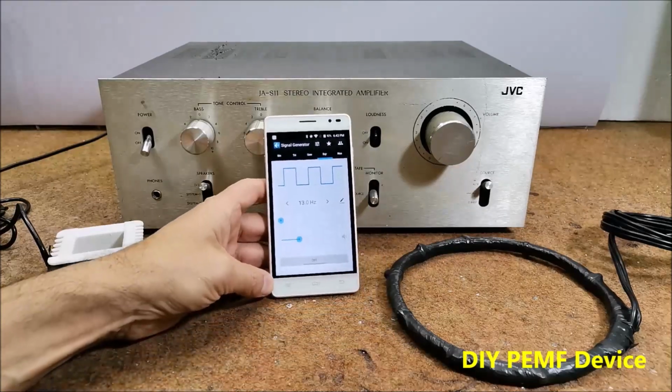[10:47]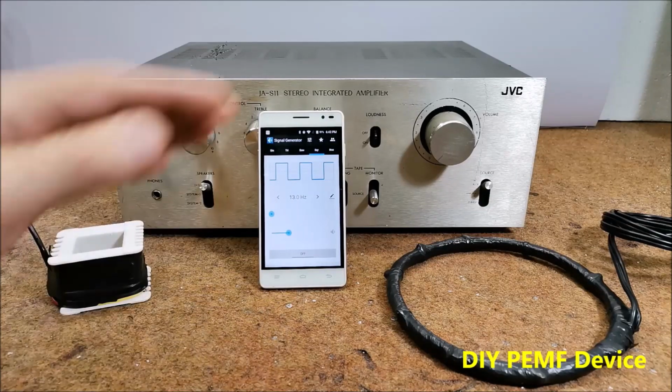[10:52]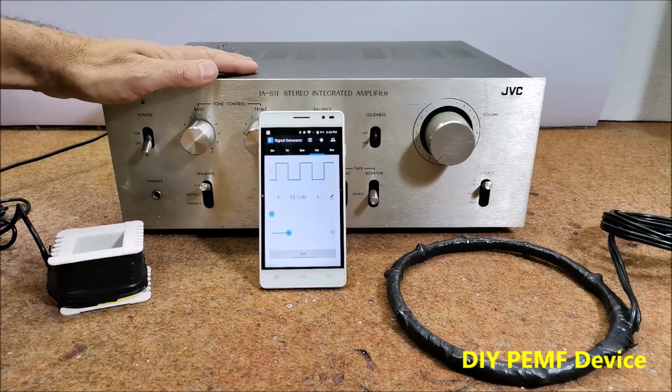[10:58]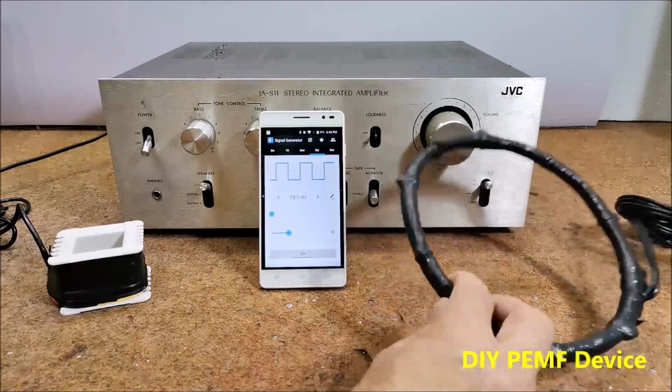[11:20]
To amplify the rectangular signal generated by the smartphone, we will use an ordinary audio amplifier that we usually have for listening to music. If we don't want to use the amplifier for this purpose, we can buy an inexpensive Class D amplifier with Bluetooth connectivity that costs less than $40 and uses a laptop power supply of 19V DC. Finally, we need one of the coils whose production I described earlier.
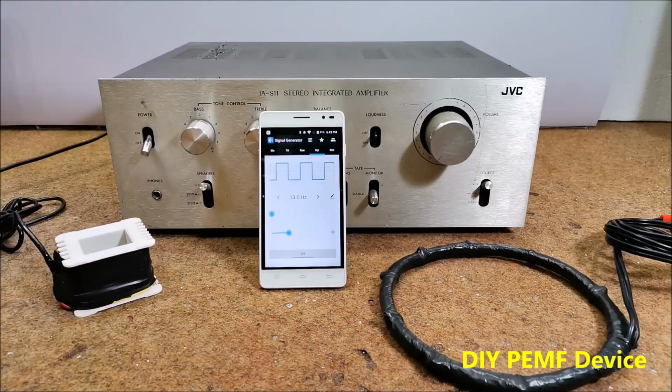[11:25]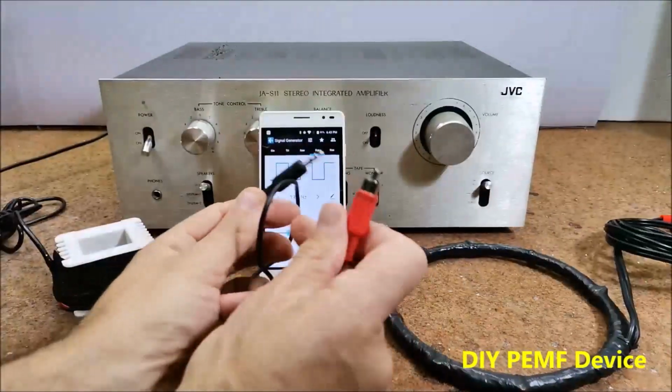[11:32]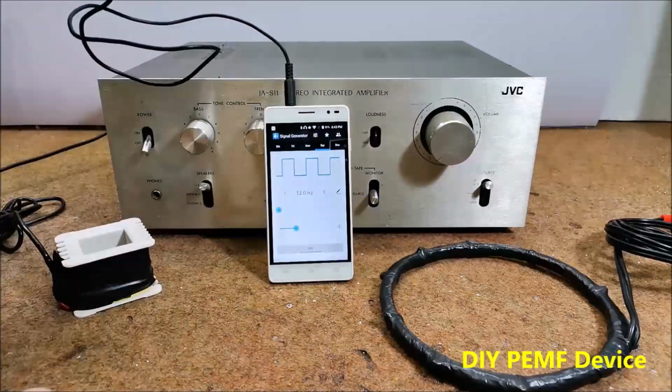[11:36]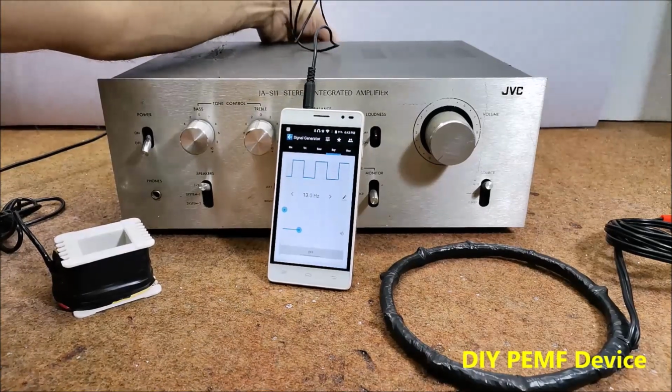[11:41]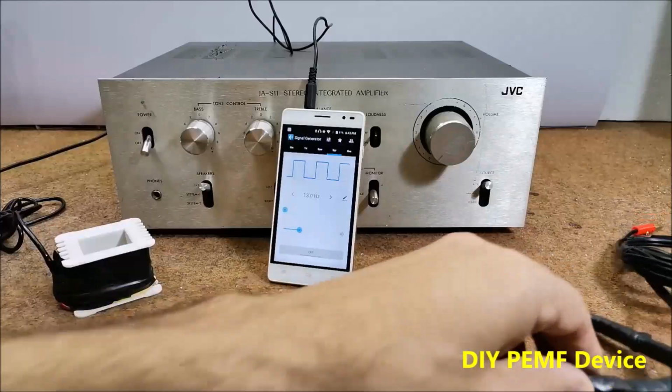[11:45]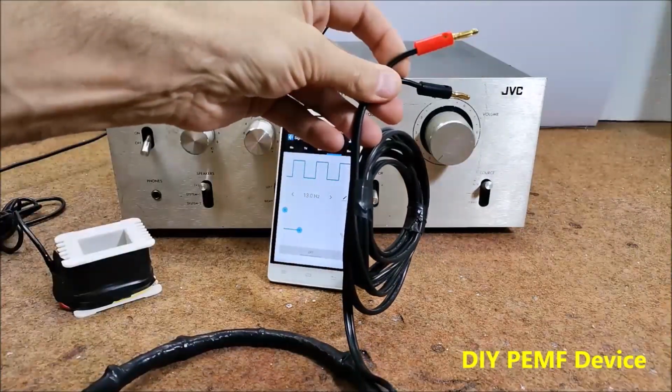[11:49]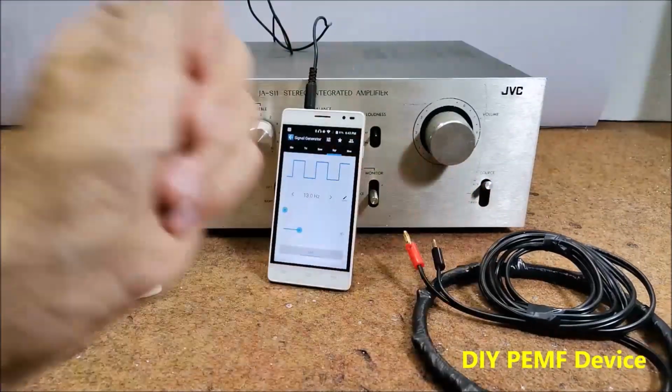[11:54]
Now we need to connect a cable from the phone's headphone jack to the AUX or similar universal input on the amplifier. Next, at the place where the speakers are connected, we connect the coil in place of the speaker. And that's all. We made the simplest PEMF machine.
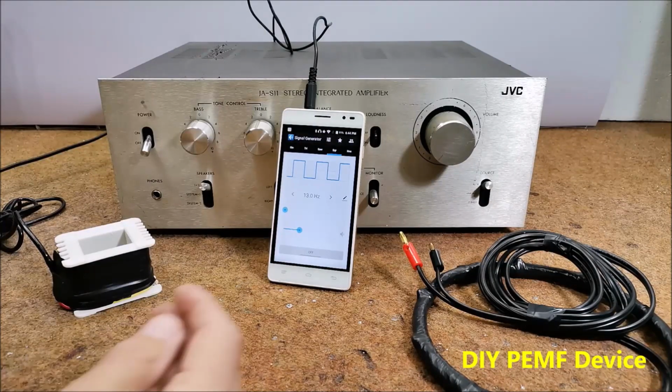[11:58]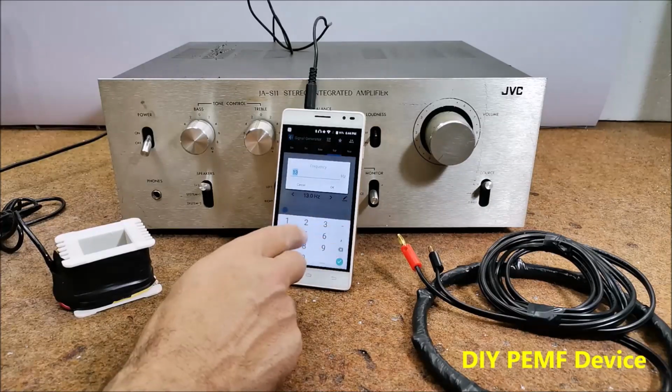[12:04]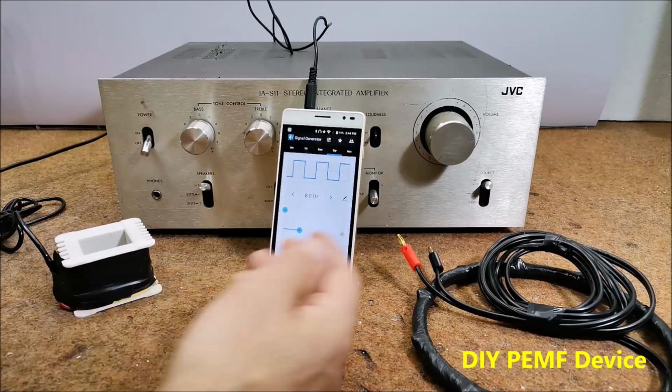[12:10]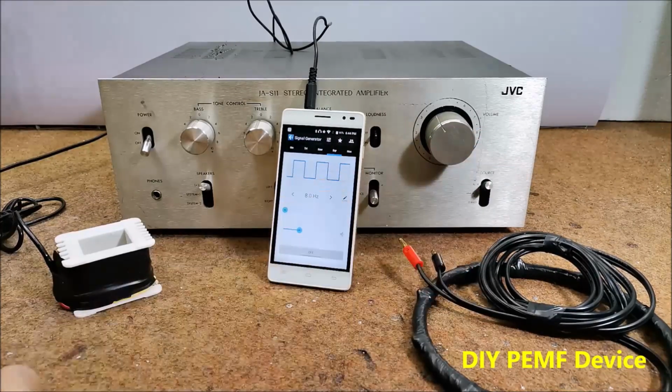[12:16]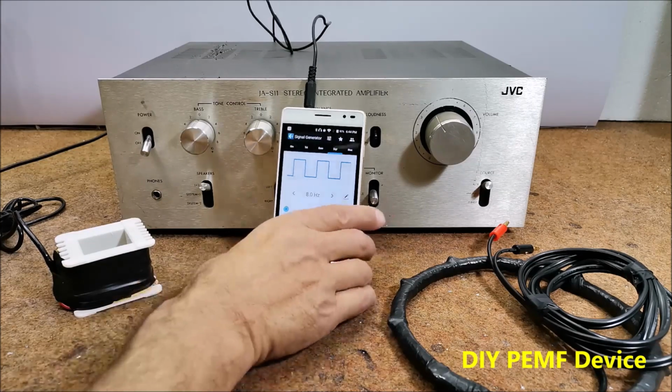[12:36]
We turn on the amplifier and the smartphone software in which we enter the desired frequency. Next, we turn the volume potentiometer up to 50% and press start on the phone. To check if the device works, we need to bring a small neodymium magnet close to the coil and the magnet should move. Now let's see how this looks in reality.
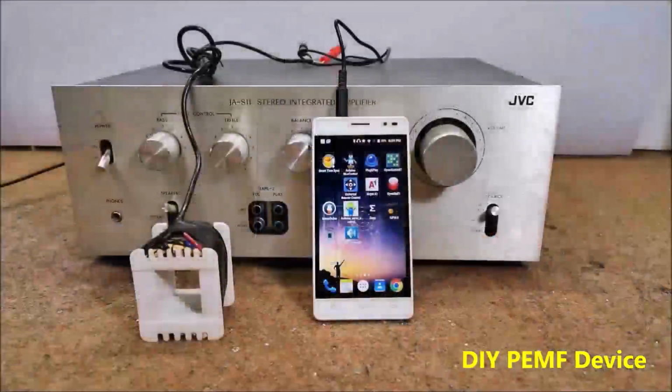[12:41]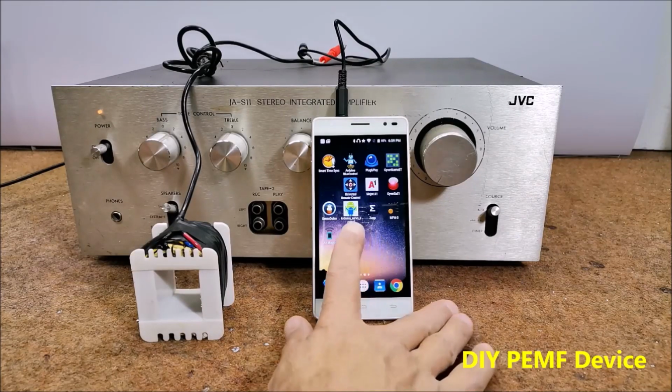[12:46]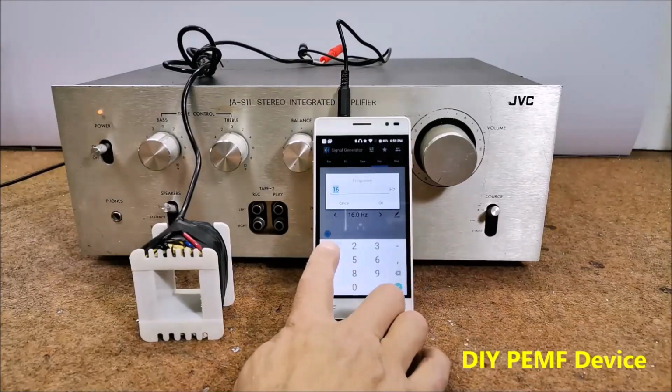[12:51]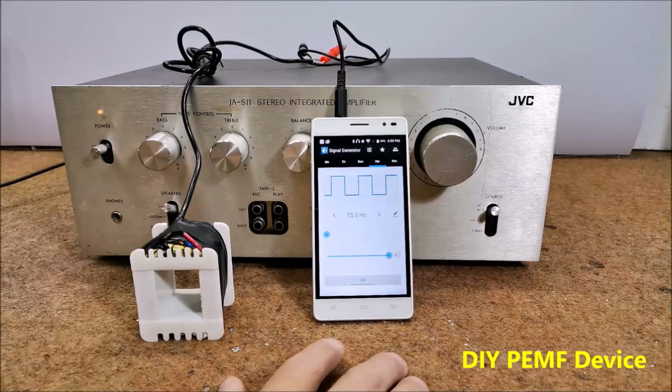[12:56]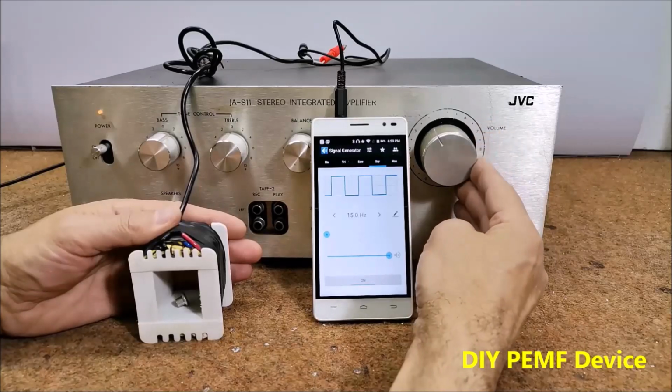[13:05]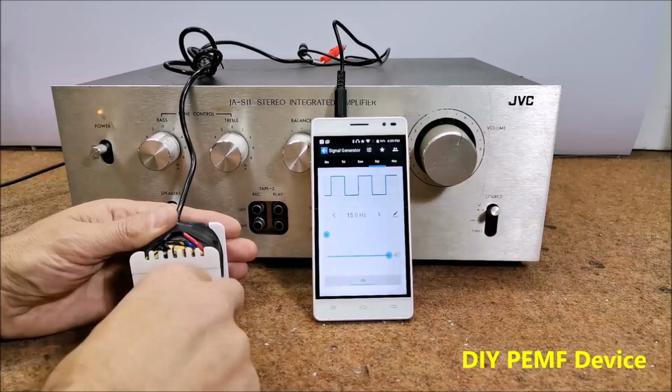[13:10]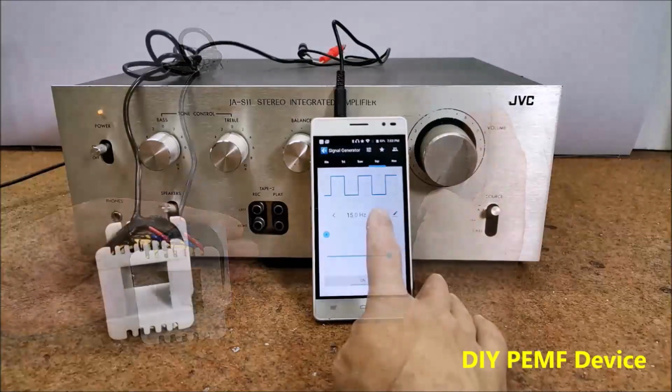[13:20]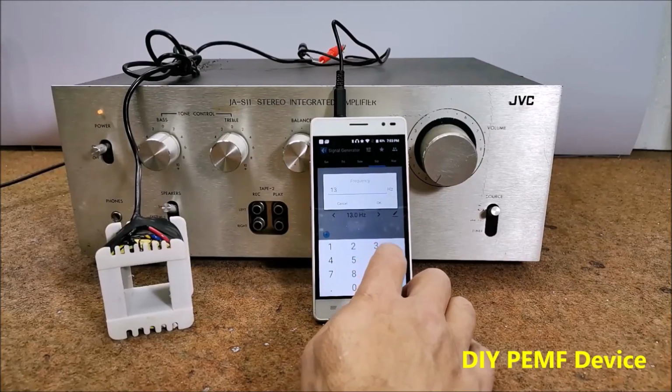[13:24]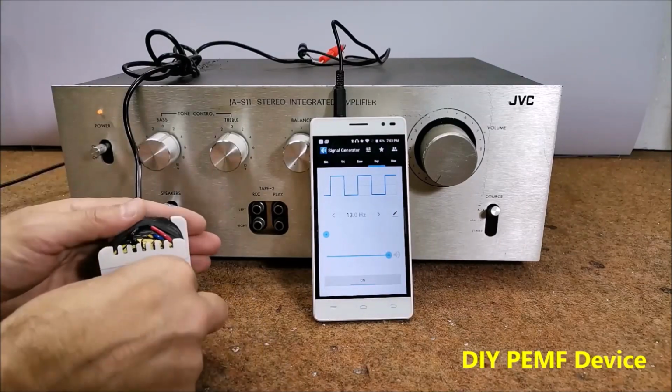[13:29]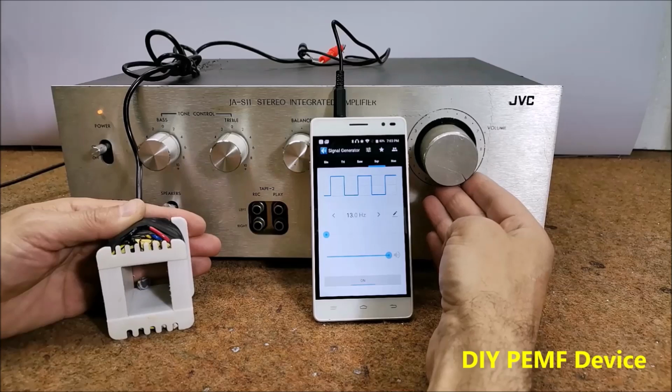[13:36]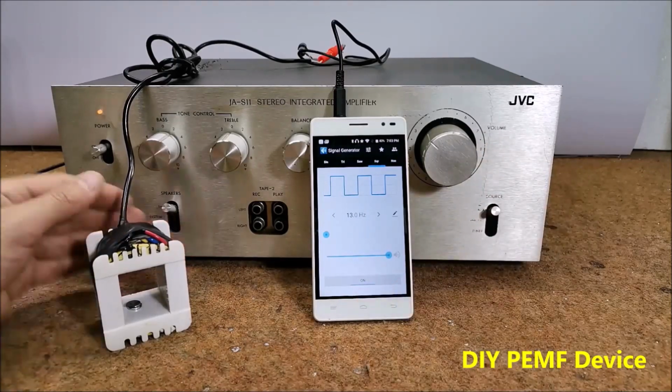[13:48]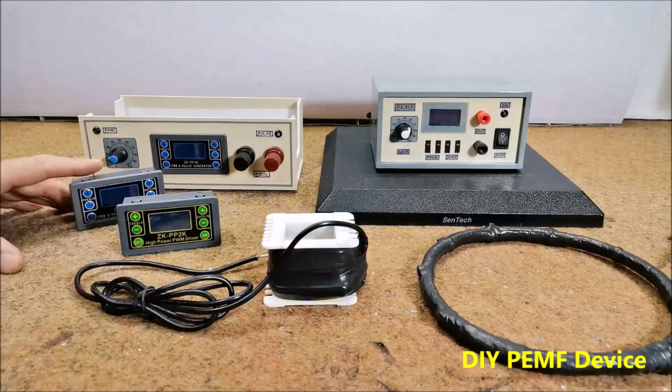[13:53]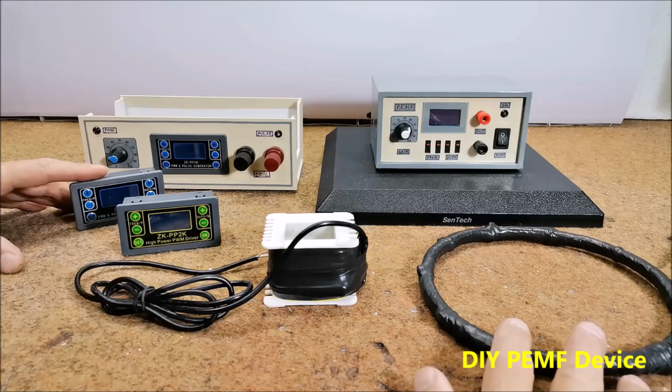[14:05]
There is a big misconception about the frequencies and the way in which PEMF therapy is used, and it is equated with RF devices. The frequencies used in commercial PEMF devices manufactured by reputable medical equipment manufacturers range from 6 Hz to 70 Hz, and the magnetic flux ranges from 4 to 23 Gauss. It radiates with a single frequency for 20 to 30 minutes a day.
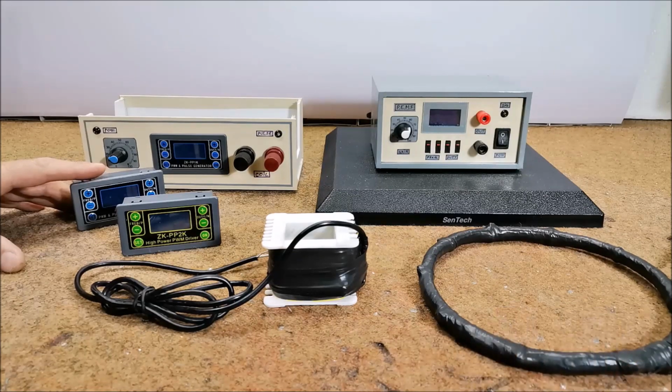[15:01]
I'm telling you this because I had the opportunity to visit several physiotherapy facilities that provide PEMF therapy services. I am currently preparing a video about facts, deceptions, and characteristics to consider when purchasing or building a PEMF device, and I will publish it soon. Of course, as an electrician, I will stick to the characteristics in the domain of physics and a little human psychology and marketing, and I will leave the medical benefits and effects to be discussed by the people who are competent in that field.
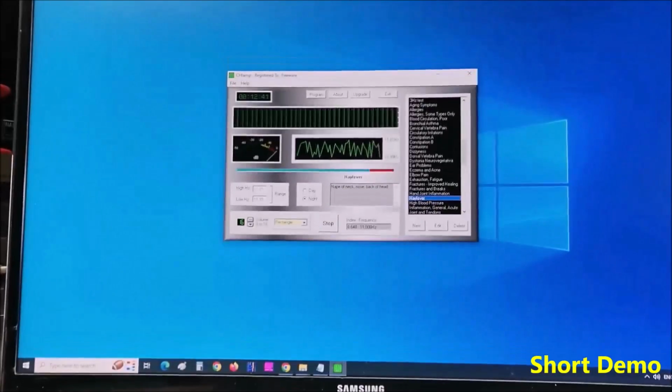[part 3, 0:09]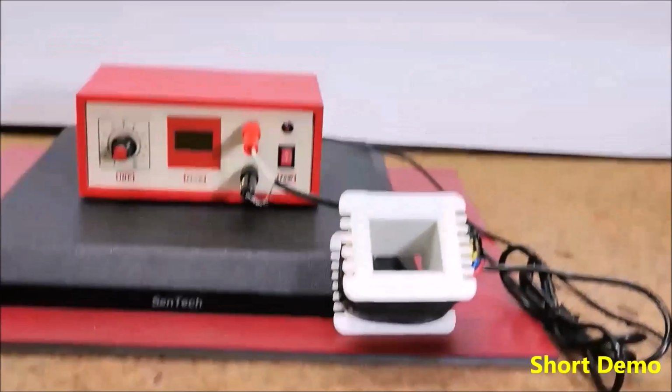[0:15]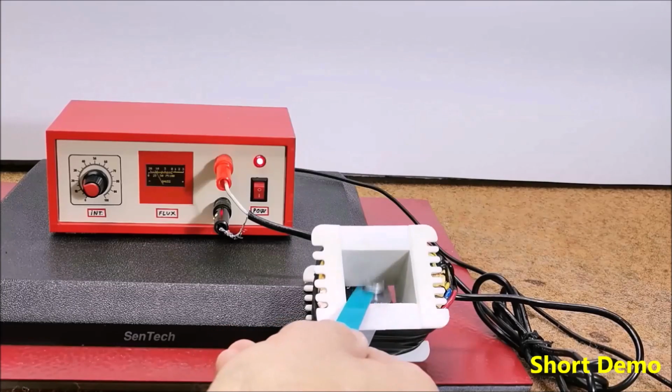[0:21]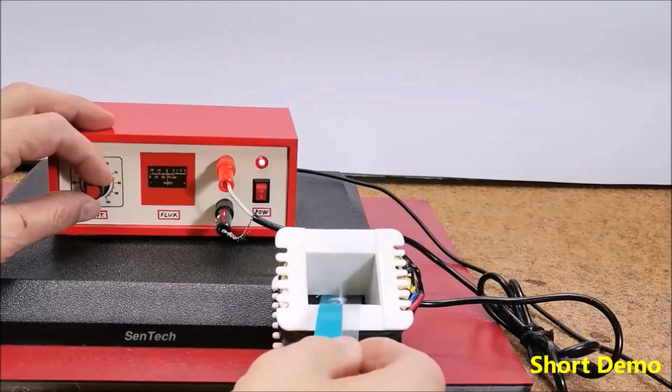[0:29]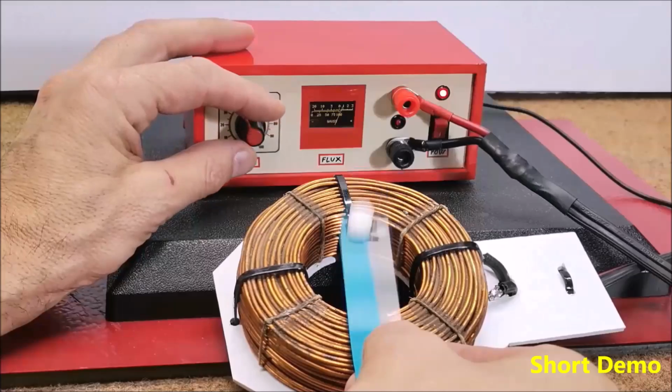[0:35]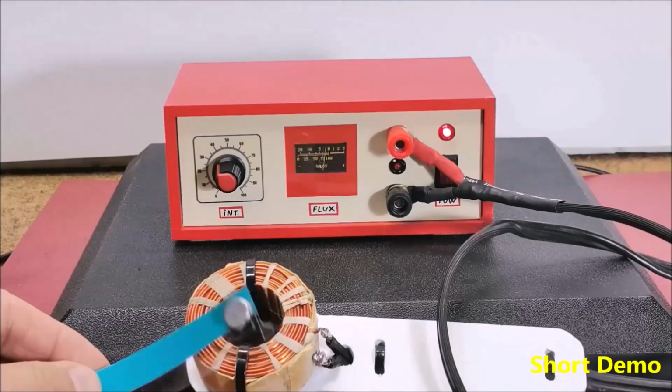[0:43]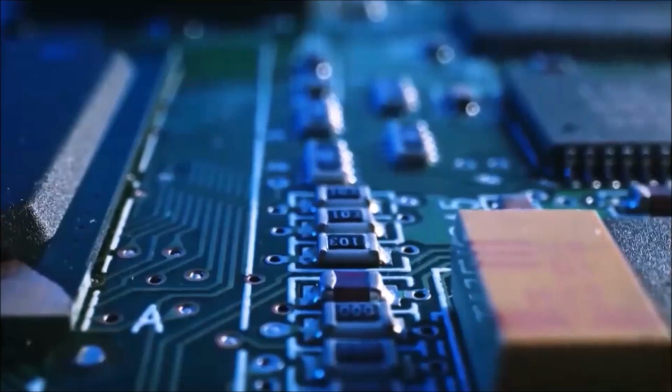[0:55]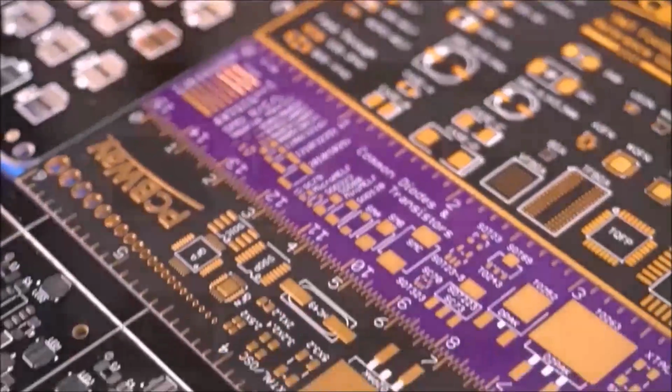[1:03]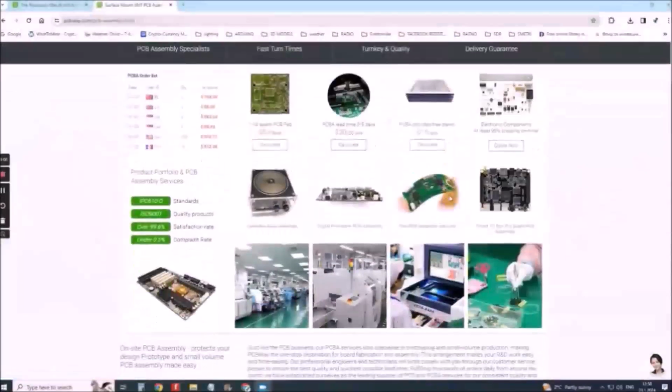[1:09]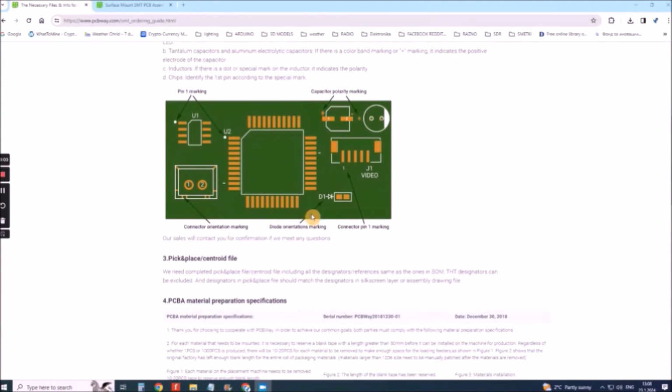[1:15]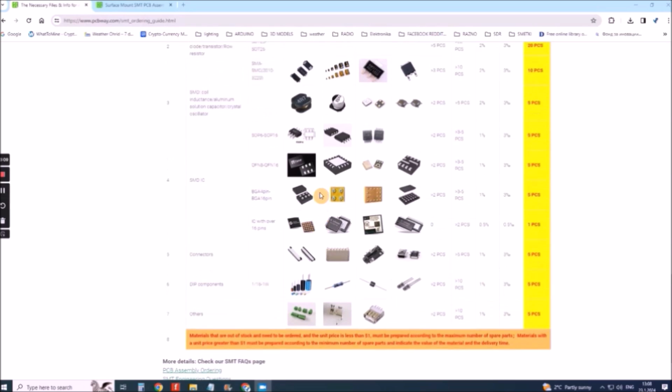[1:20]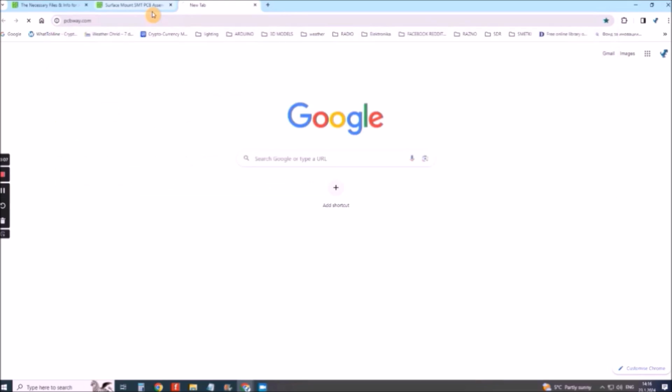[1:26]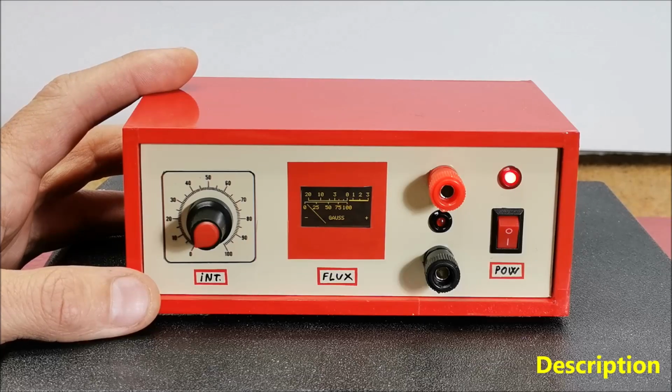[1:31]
www.pcbway.com for more services. Hello, PEMF or Pulsed Electromagnetic Field Therapy is a type of therapy that uses electromagnetic fields to improve health and well-being. The basic idea behind PEMF is that it can influence the body at the cellular level, promoting healing and regeneration. The electromagnetic fields generated by PEMF devices can penetrate the body and interact with the cells and organs. PEMF therapy is used in various medical and wellness applications. It is commonly employed for pain management, wound healing and bone-related disorders.
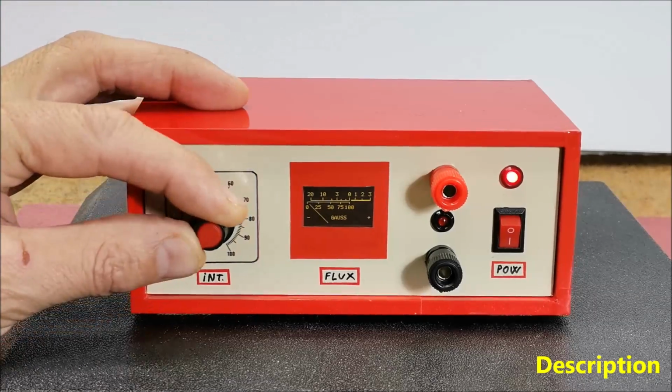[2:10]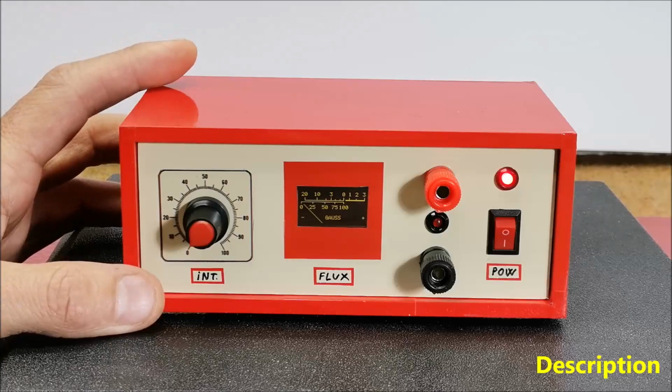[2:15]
In several of my previous videos, I described simple ways to cheaply make such a device yourself. This time I will describe a way to make a PEMF device that will receive the frequency signal from an external device, such as a personal computer with appropriate software, a mobile phone or a commercial PEMF device that has a voltage output, whereby this device would amplify that signal. The magnetic field that can be radiated by this device reaches a value of up to 150 Gauss, and with the parallel addition of MOSFETs and a powerful power supply, stronger fields can be easily achieved.
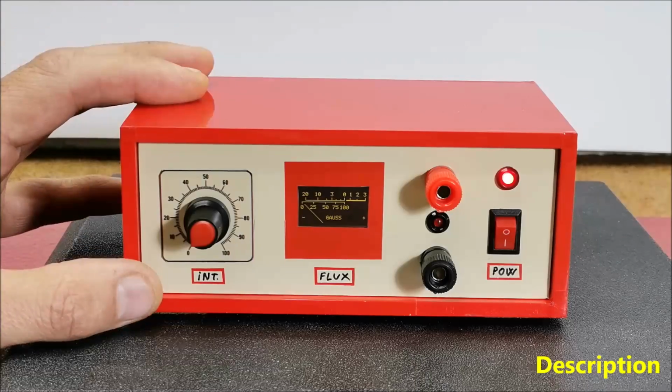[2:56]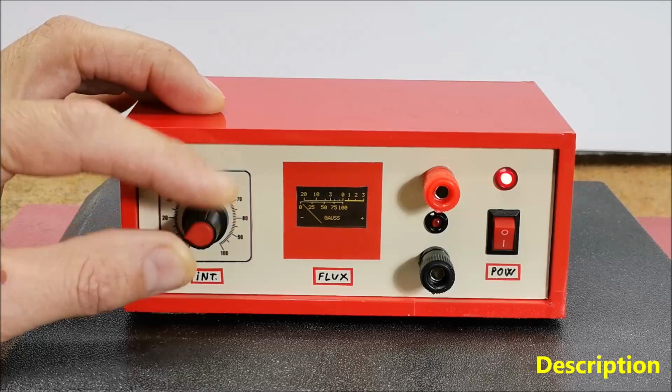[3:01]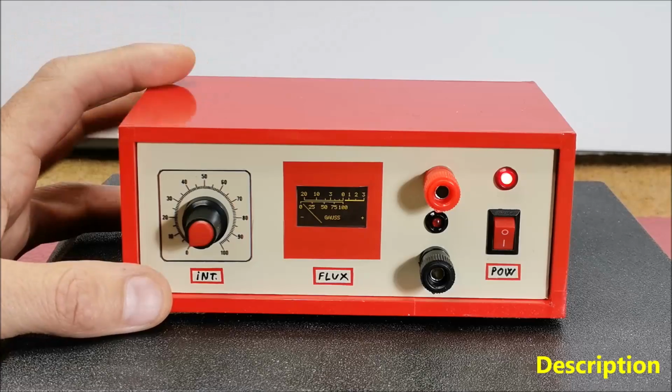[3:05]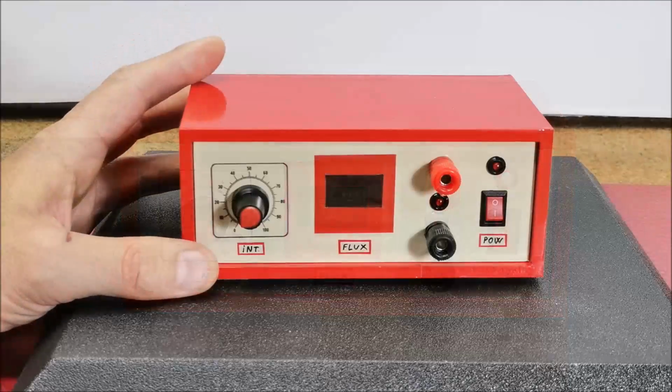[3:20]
Of course, the radiation coil plays an important role here, which you can see more about in the videos mentioned above. However, I should also mention that according to NASA research, fields of even 1 to 4 Gauss are sufficient for effective therapy. The device also has a meter of the strength of the emitted magnetic field made with an Arduino microcontroller, but this time we will leave this part out for a simpler design. Only a few components are used when making the device.
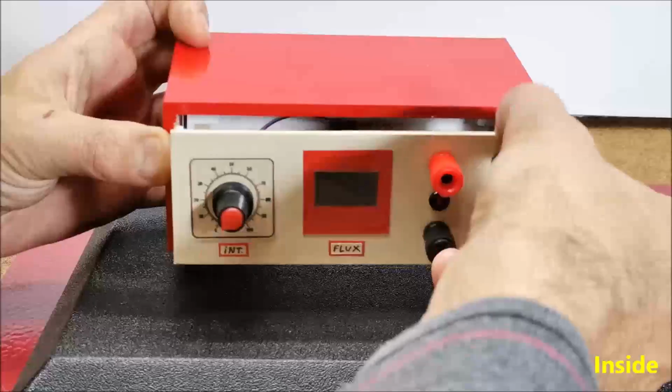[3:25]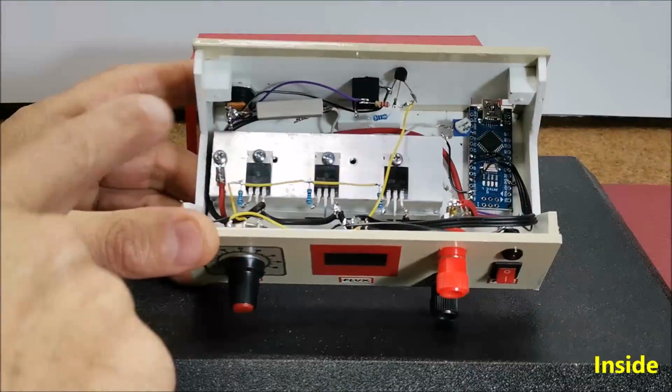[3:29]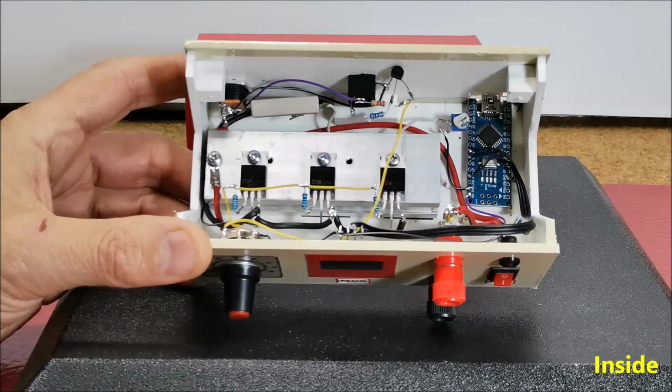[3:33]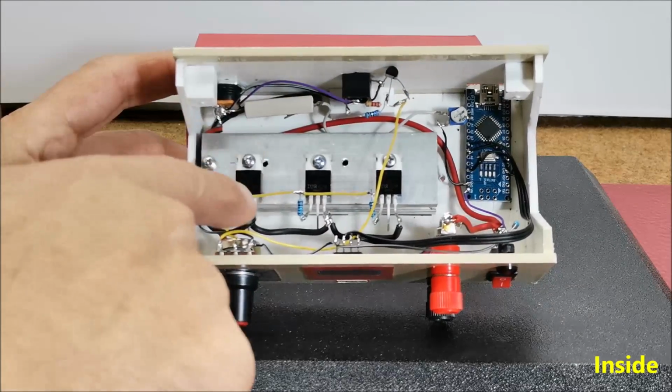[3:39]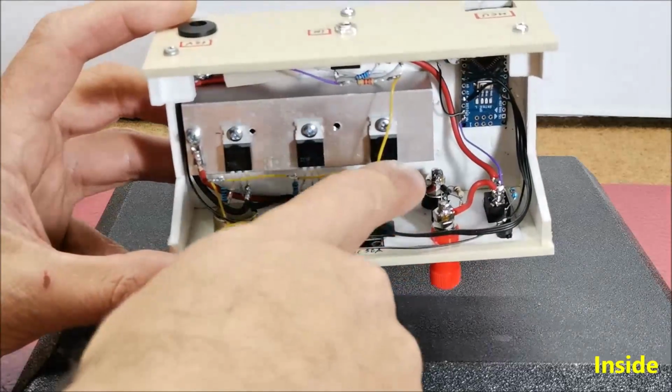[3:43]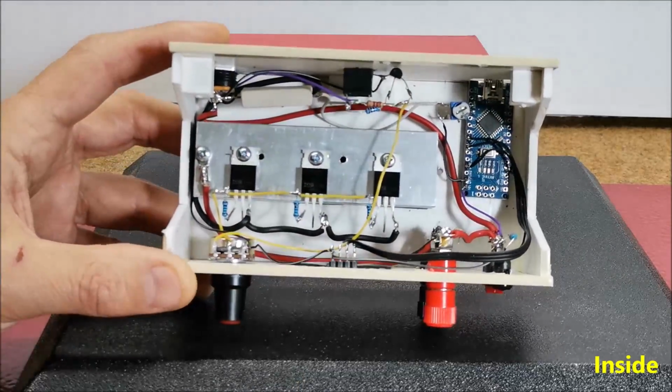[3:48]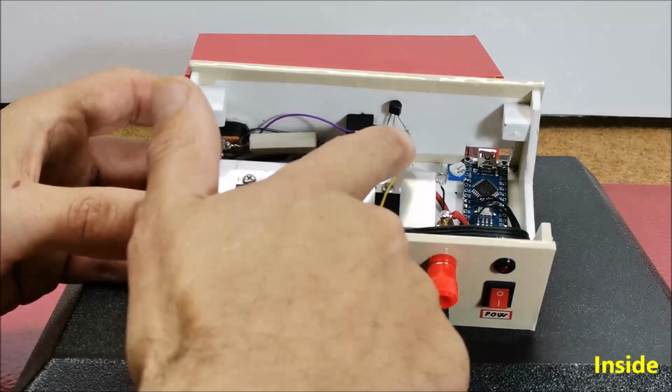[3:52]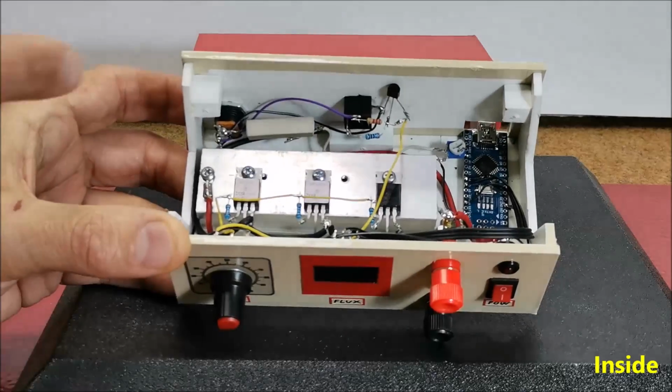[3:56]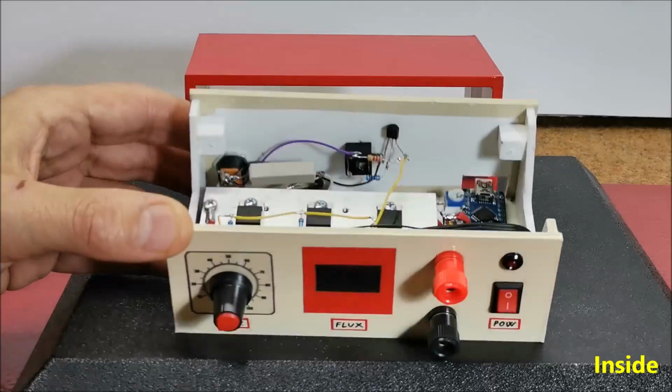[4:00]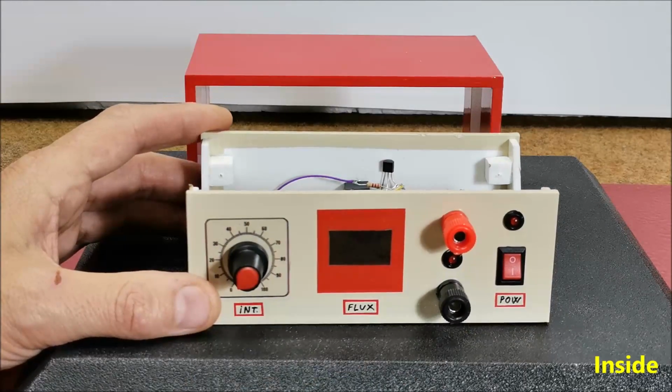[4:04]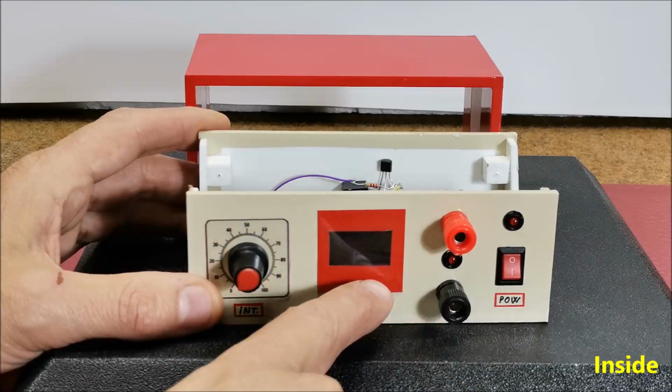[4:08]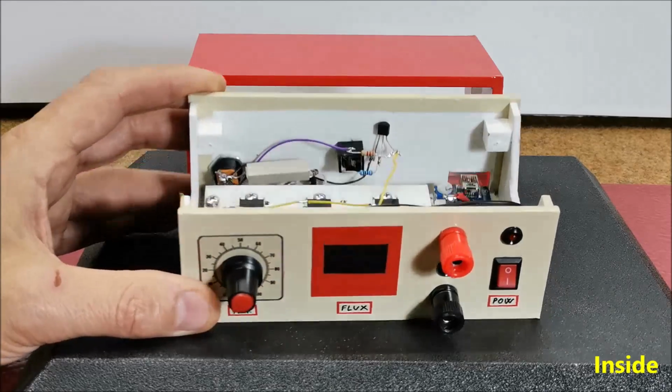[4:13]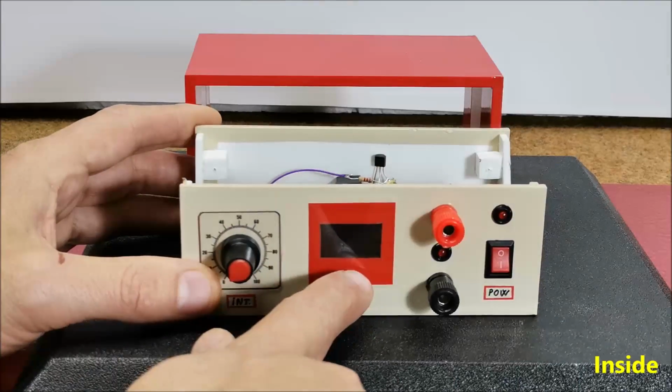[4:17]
Three power MOSFETs. I use IRF3205, but any with similar characteristics can also be used. 300 ohm resistors, 1N4007 diode, 10 kilo ohm potentiometer, signal shifter, 1 NPN transistor and 2 resistors, that is the signal shifter, power supply 12 volts, minimum 60 watts, and a coil in which the magnetic field is generated and radiated. Optionally, I installed a power meter, and I will describe its construction in one of my next videos. It consists of an Arduino microcontroller and a small OLED display.
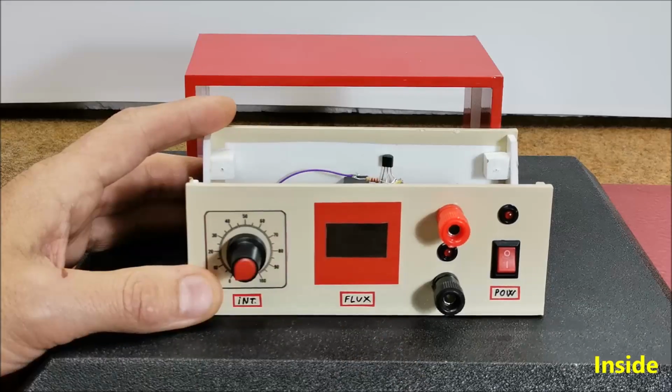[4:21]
The power meter is a very useful addition to the device, but it is a little more complex to make, so you can also use a standard milli or microamp meter with a moving needle, in which case the sensitivity of the instrument is adjusted using the trimmer potentiometer. A circuit diagram for this case is also given in the attachment. Now let's see how the device works in real conditions.
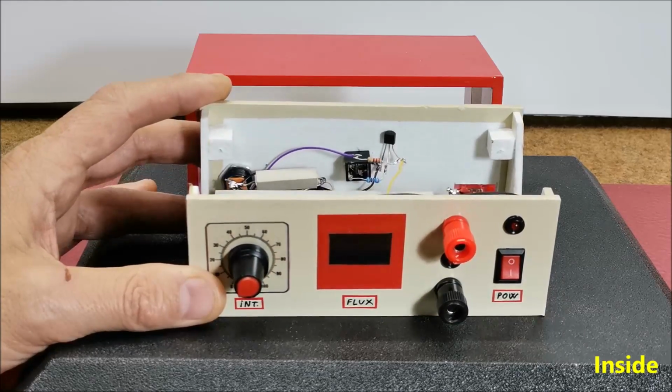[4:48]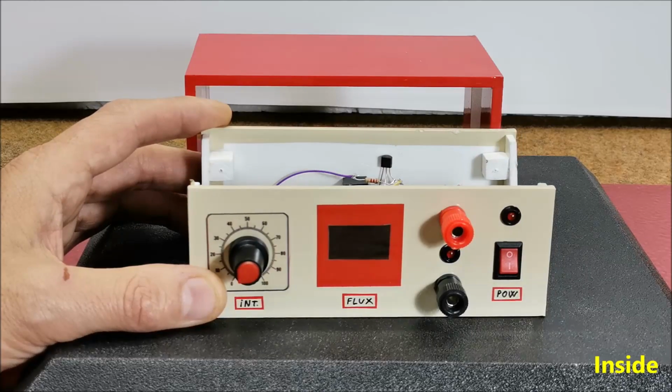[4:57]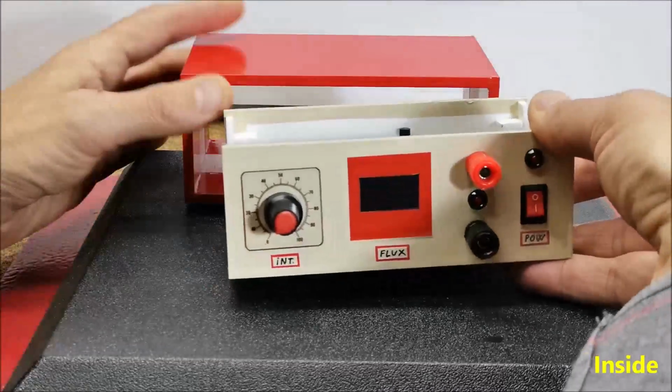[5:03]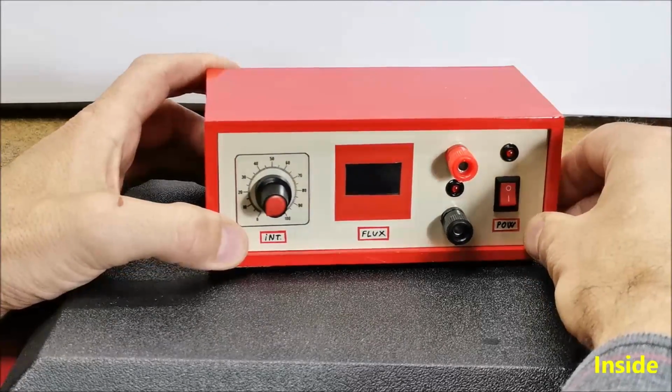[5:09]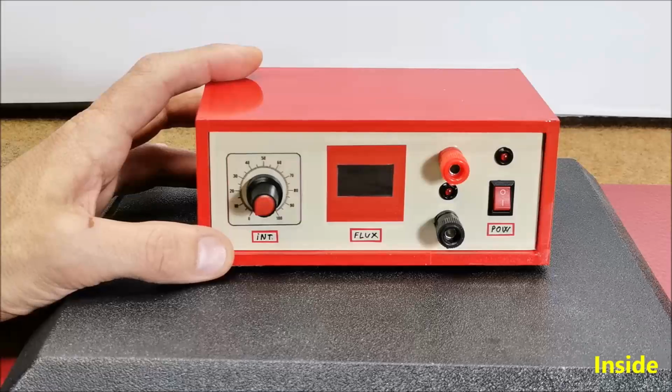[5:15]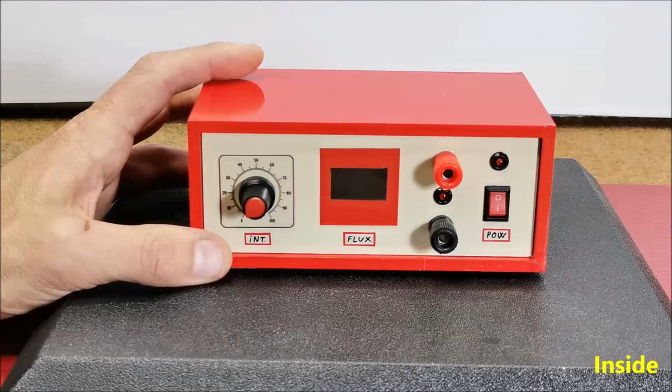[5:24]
First, as a PEMF signal source, I will use my PC with the CHIamp software created by Ken Azel, which you can download for free on the SpectroTech site. Unfortunately, the software is given in .exe format, and the antivirus program detects it as a virus, but after I downloaded it, I scanned it with multiple antivirus programs and it turned out to be clean. CHIamp is inspired by infrasonic instruments. First, let me briefly describe this application.
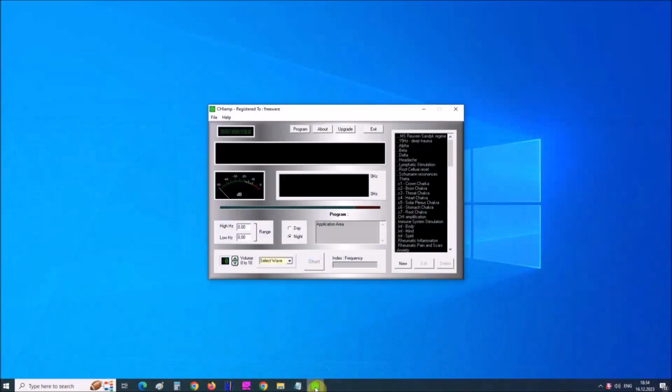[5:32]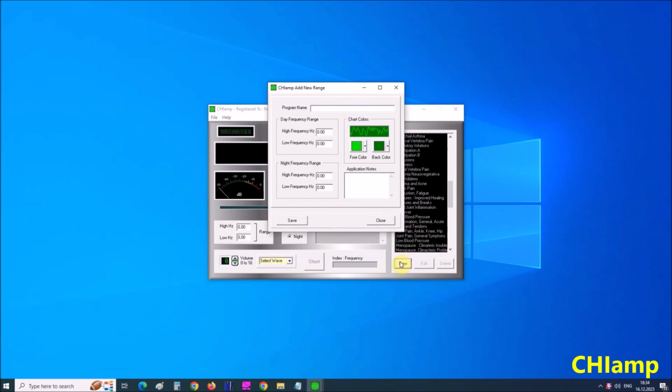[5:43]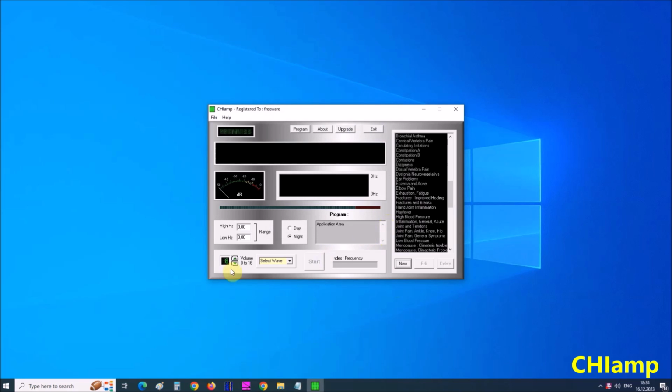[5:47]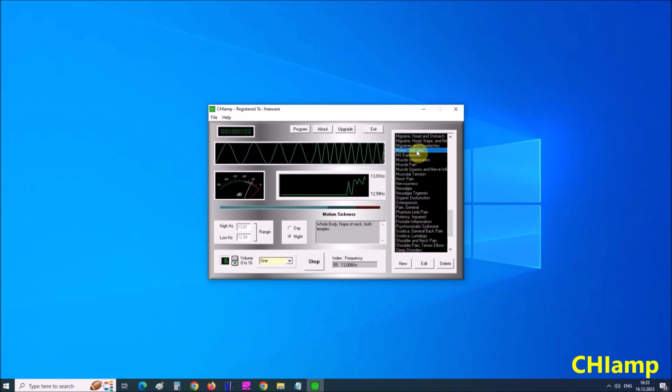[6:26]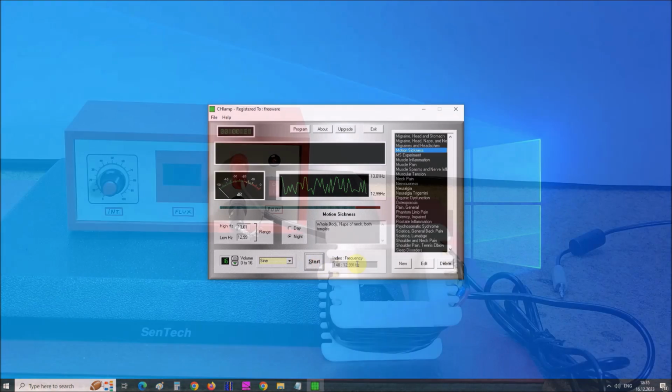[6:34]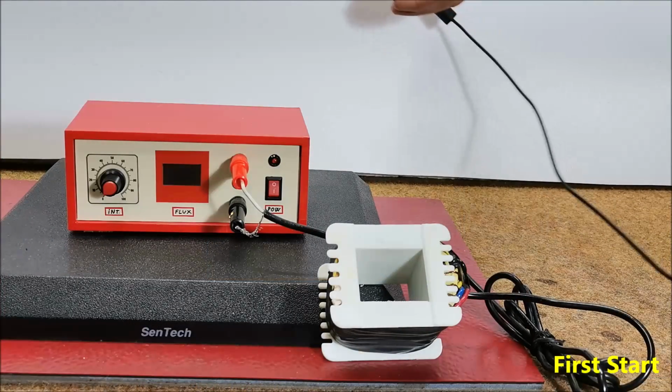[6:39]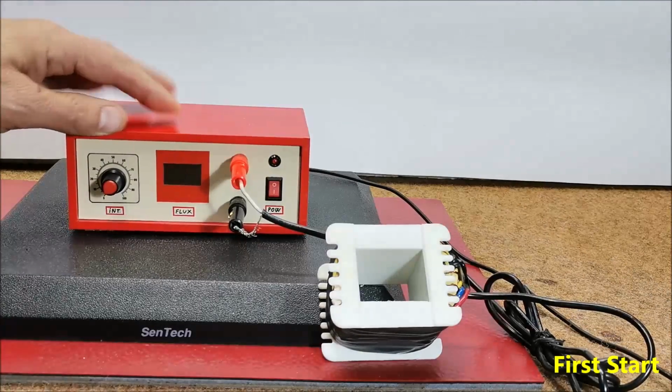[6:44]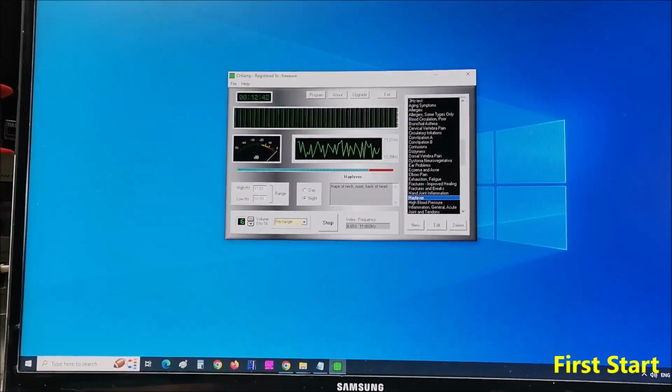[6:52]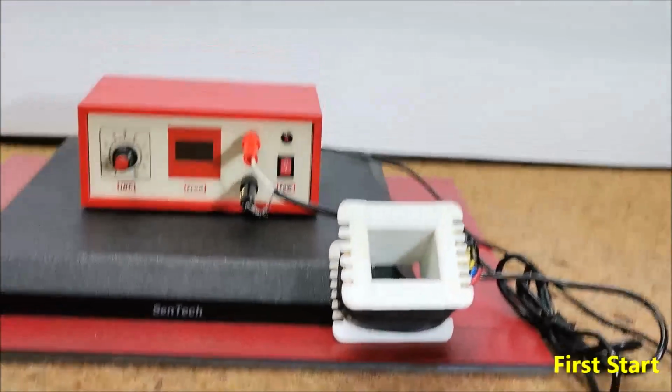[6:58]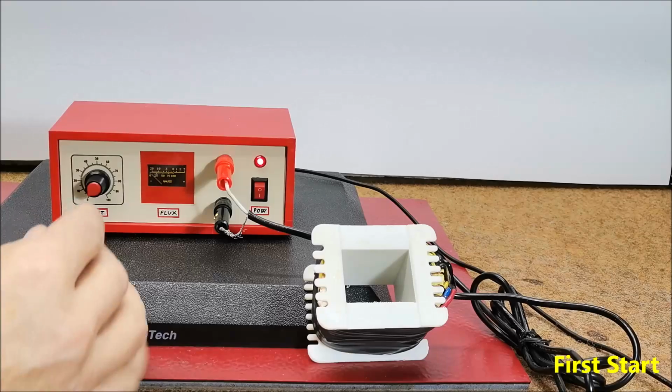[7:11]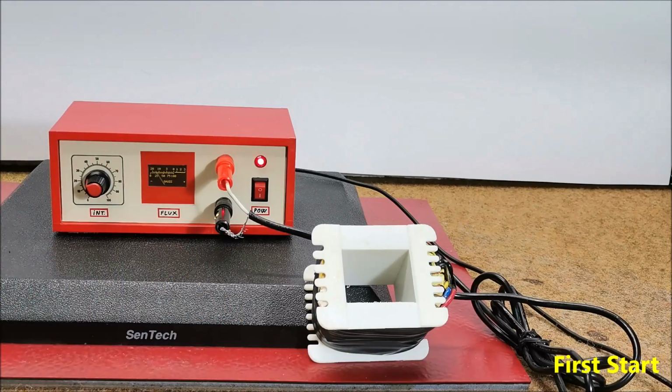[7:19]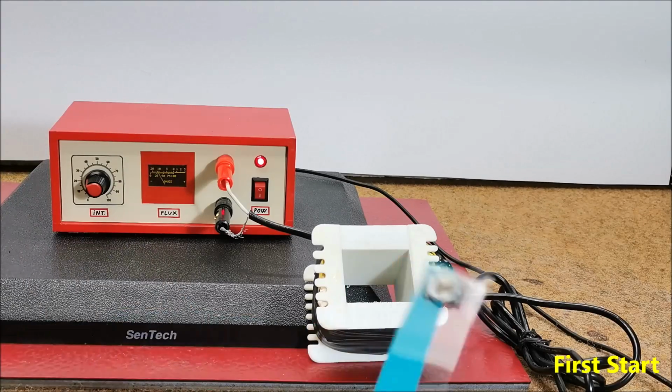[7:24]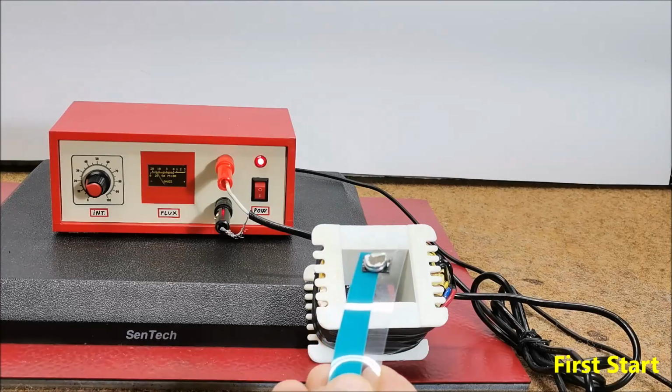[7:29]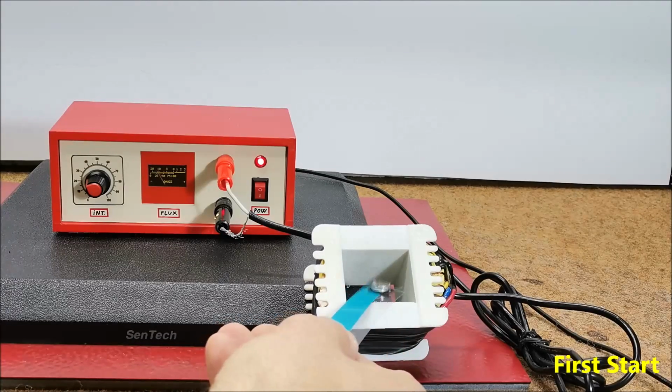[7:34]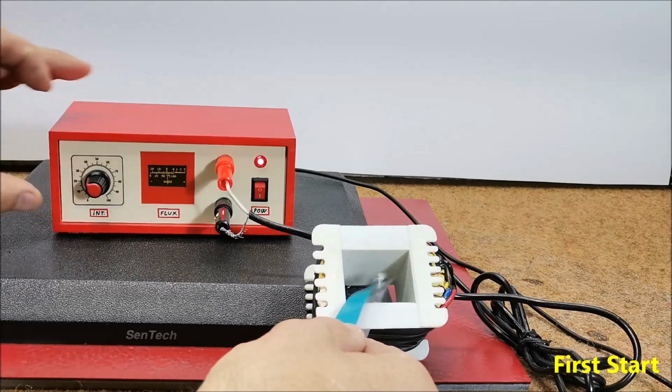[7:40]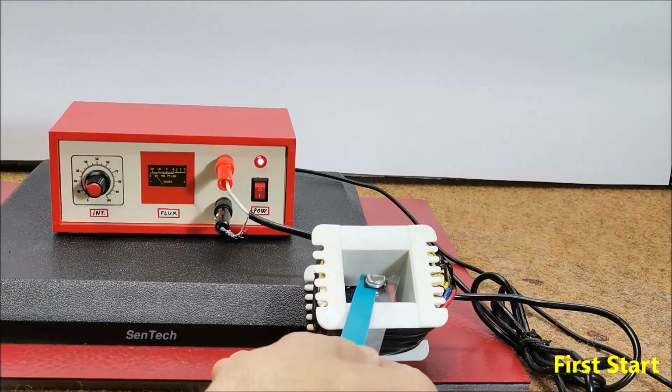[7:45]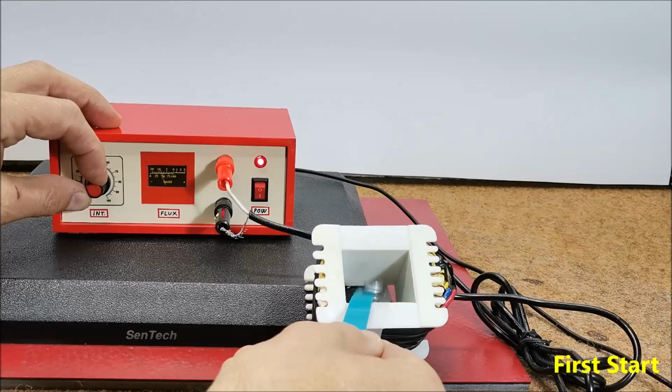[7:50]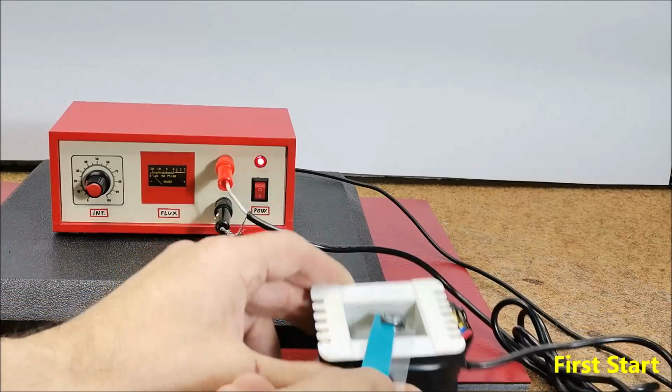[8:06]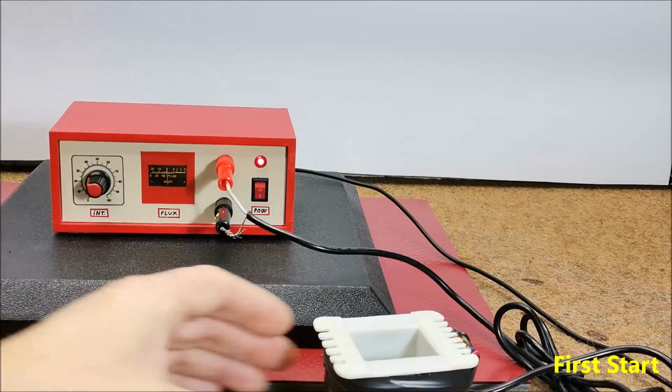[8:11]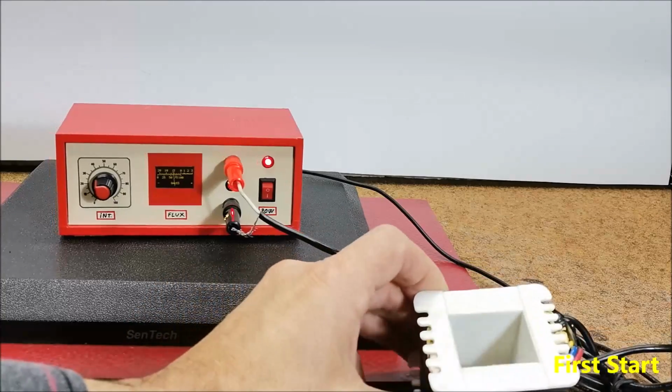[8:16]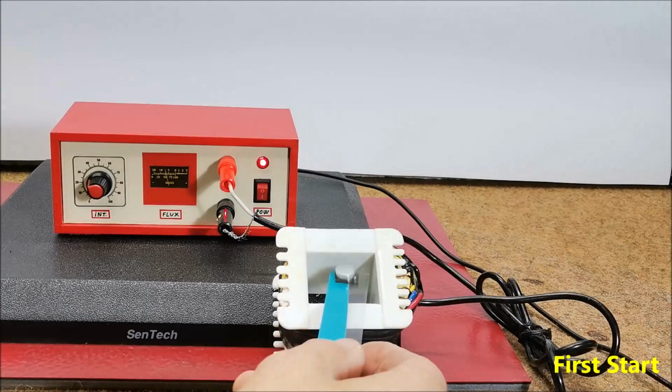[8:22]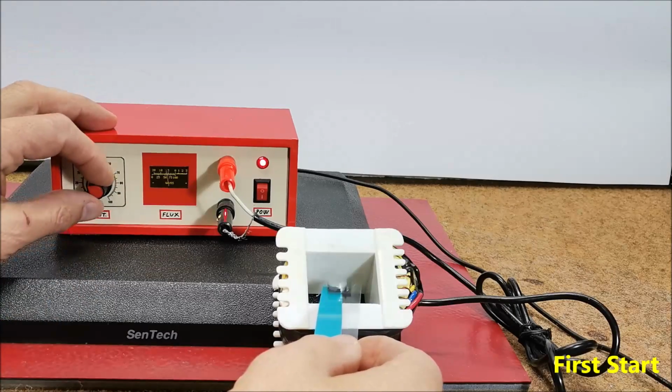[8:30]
From the line output of the sound card, we bring the signal to the input of the device. Next, we need to start the Windows program. And power on the PEMF device. Next, we move the potentiometer to a certain degree. And as we see, the meter responds. Now, if we bring a magnet near the coil, it oscillates with the frequency set in the application. The flux meter shows about 50 to 60 Gauss, maximum 60 Gauss.
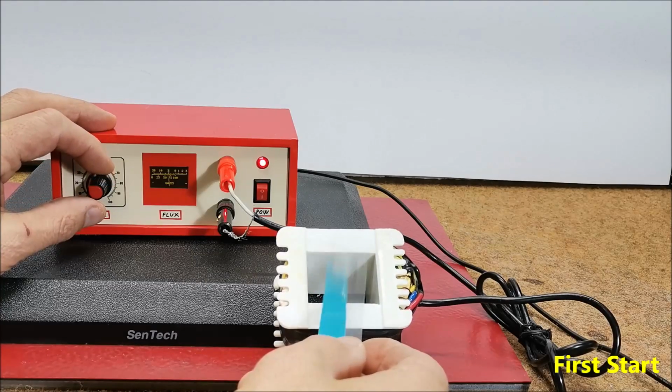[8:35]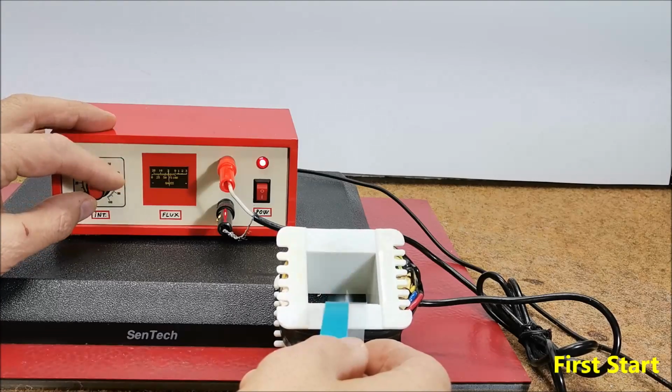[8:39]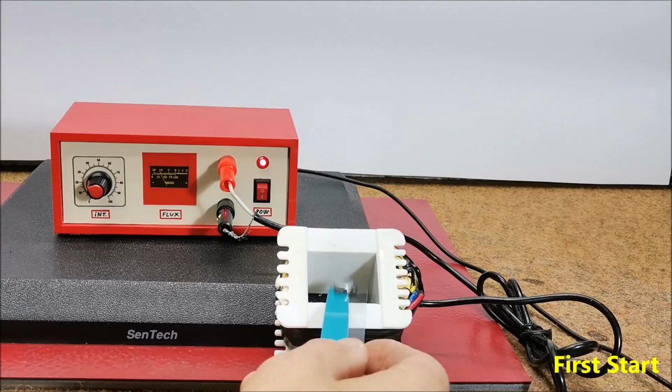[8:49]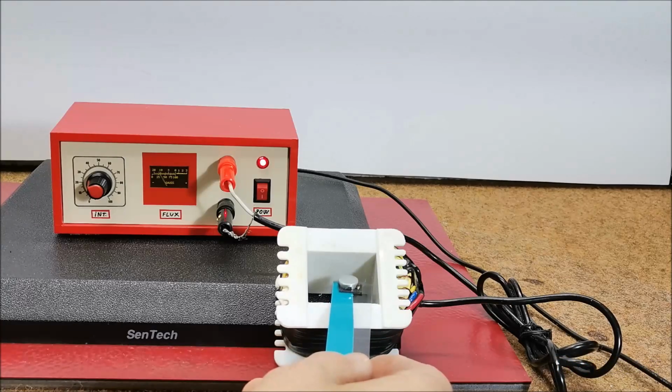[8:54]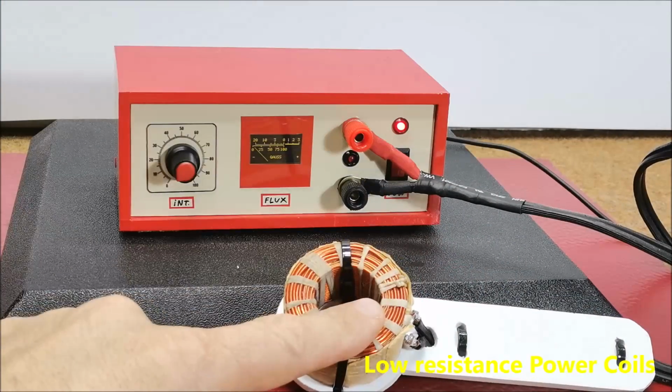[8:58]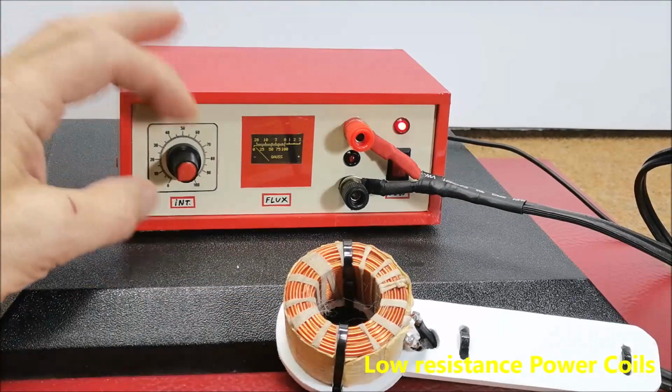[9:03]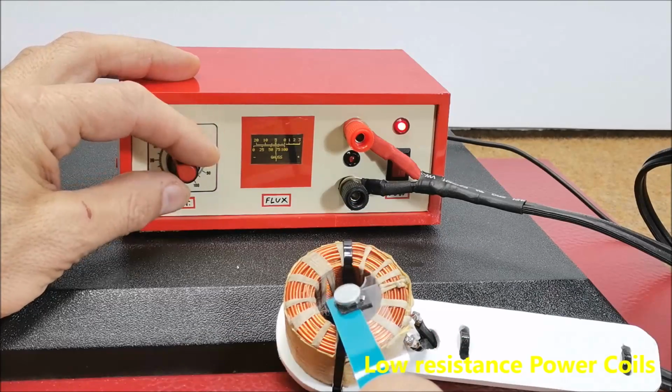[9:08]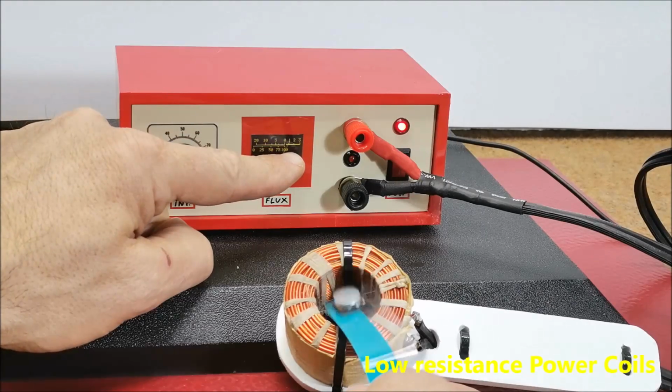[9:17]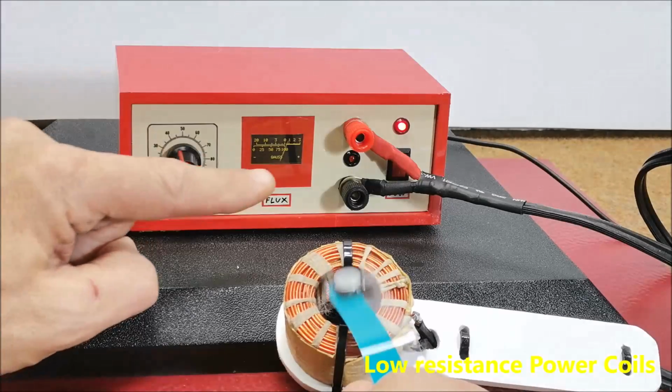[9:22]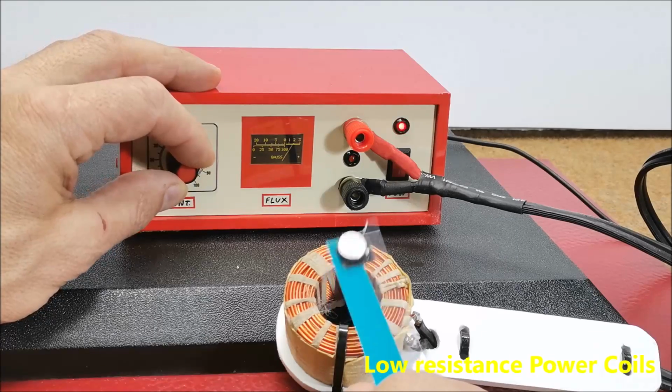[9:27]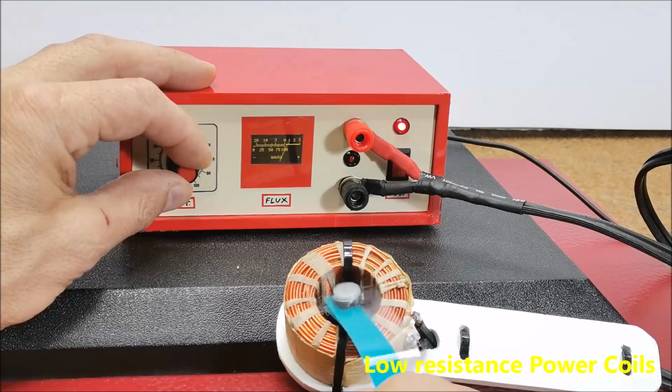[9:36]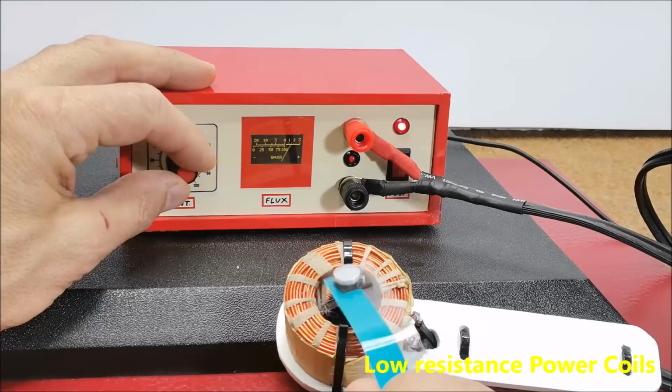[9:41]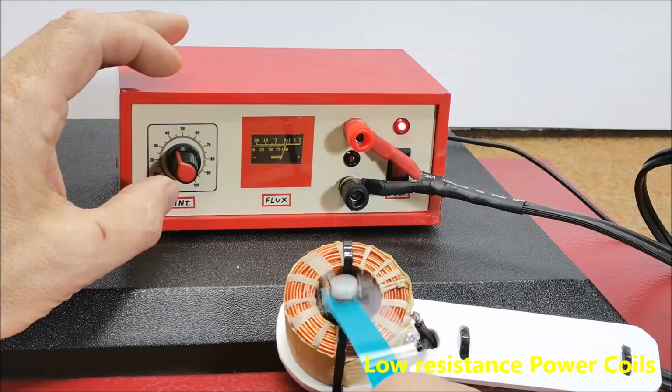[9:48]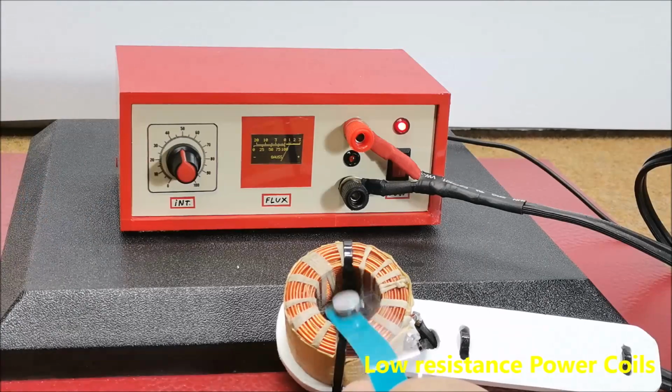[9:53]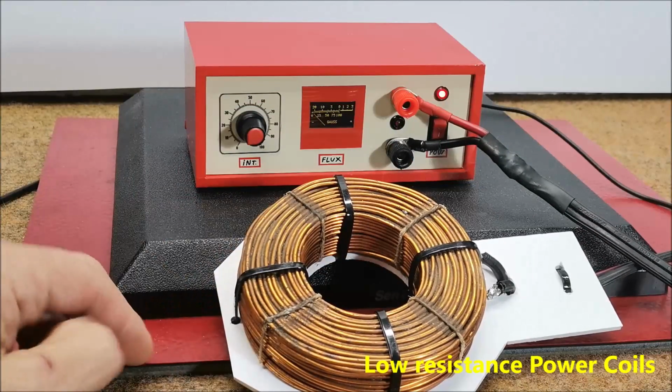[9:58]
Now I will briefly explain the relationship between coil type, radiation and power. I will now test the device with a much lower resistance coil wound with a thicker wire. As seen on the Gauss meter, values greater than 120 Gauss are easily achieved, and for more than 150 Gauss, I need a powerful power supply. I'm currently using 12 volts 6 amperes. And also this bigger low resistance coil.
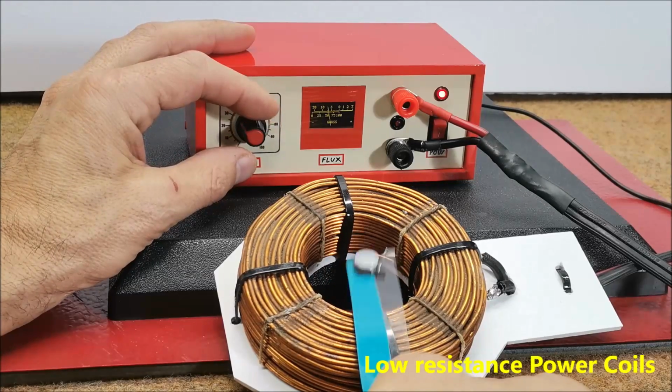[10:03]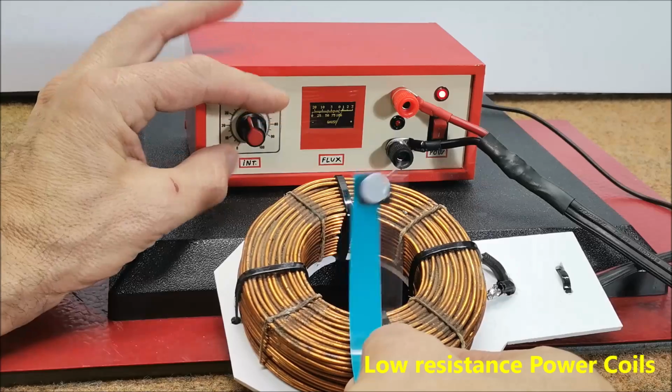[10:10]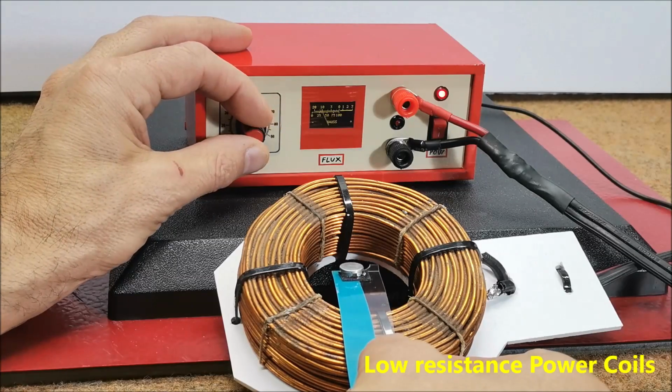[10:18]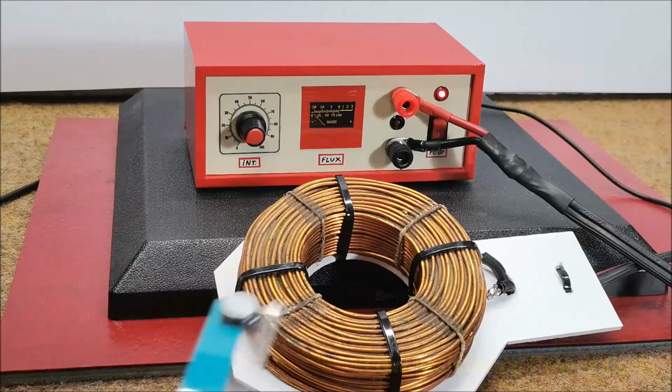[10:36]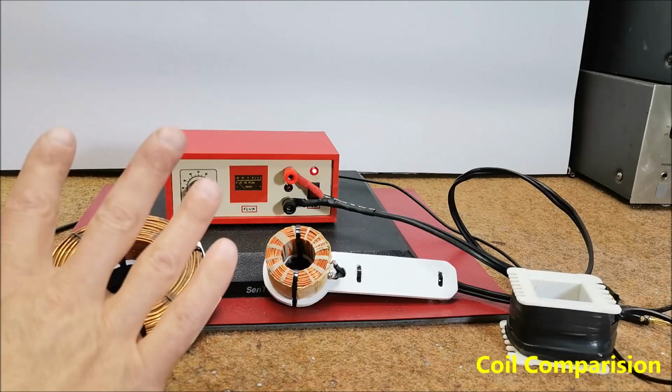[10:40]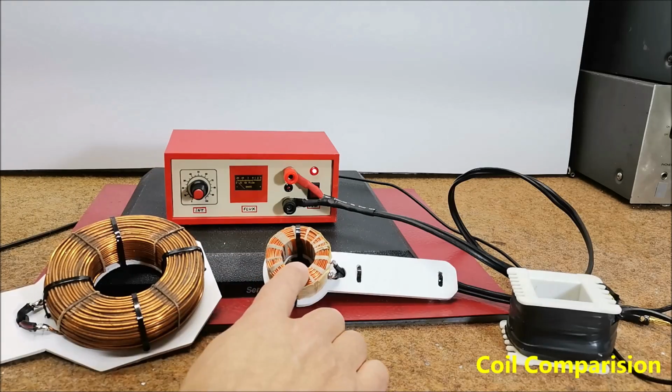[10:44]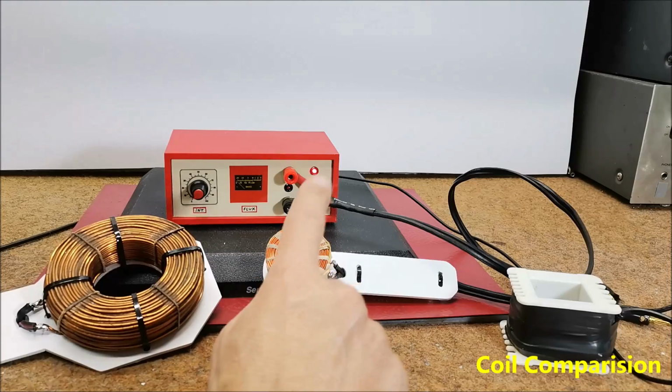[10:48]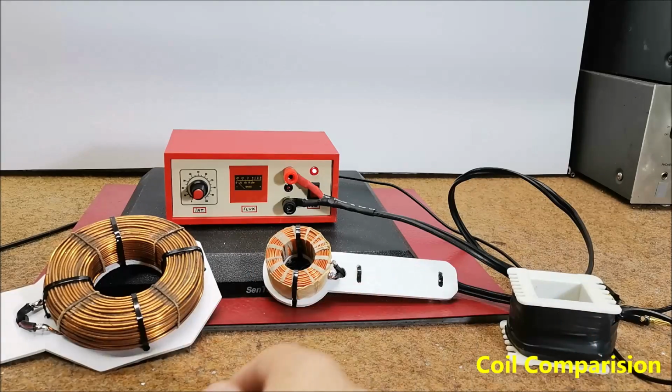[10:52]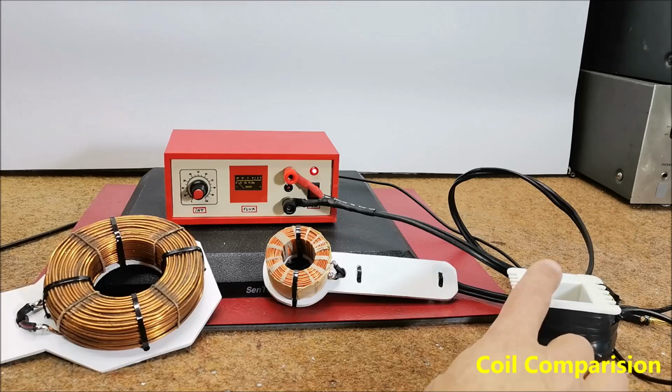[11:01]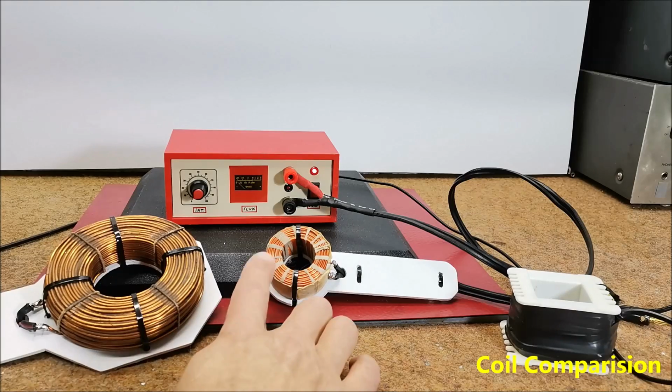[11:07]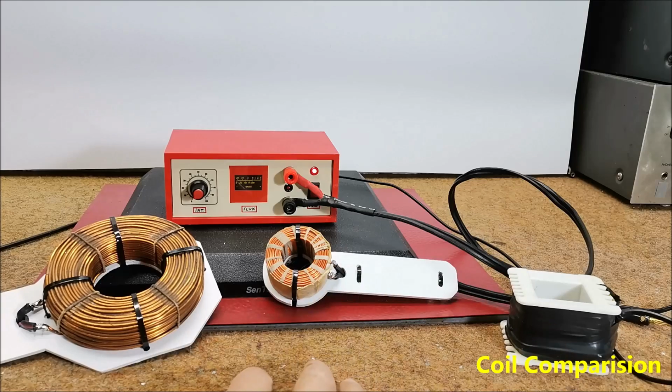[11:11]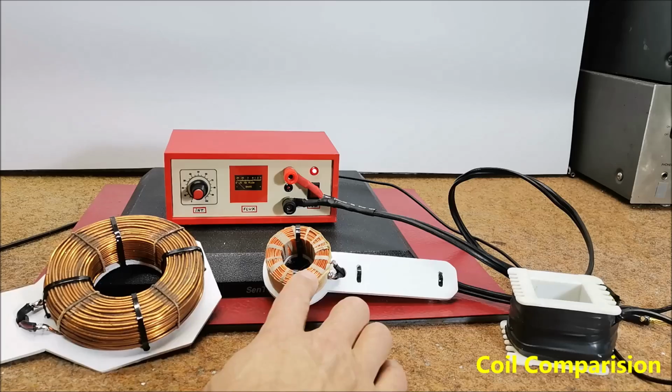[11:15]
A coil with a larger diameter radiates a field over a larger area but with a lower intensity. The smaller coil radiates a directional, stronger magnetic field but over a small area. A coil with lower resistance, made with thicker wire, generally radiates a stronger magnetic field than one with higher resistance made with thinner wire. It is very important to emphasize that the ohmic resistance of the coils should not be lower than 0.5 ohms. In the case where a coil with low resistance is used, the power supply should be capable of delivering a current of 10 amperes and more.
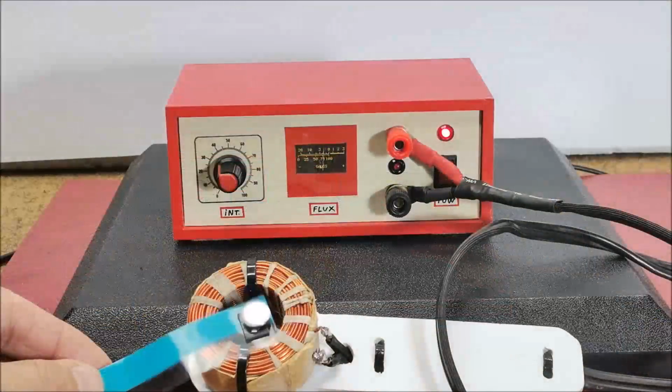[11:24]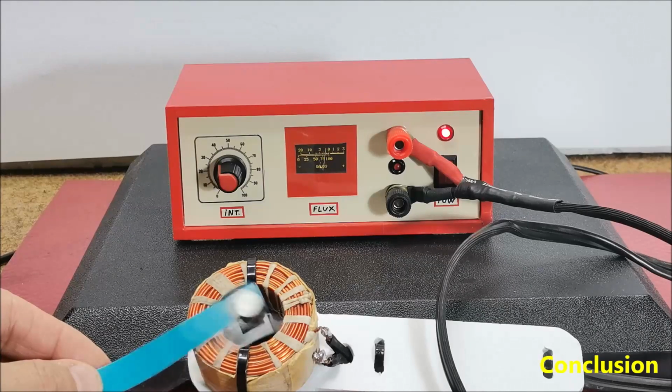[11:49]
Instead of a personal computer, we can use a commercial PEMF device with an output signal port or simply an Android smartphone with a signal generator application. And finally, a short conclusion. This universal device is actually only a PEMF signal amplifier and not a complete PEMF device, but therefore it can be connected to various sources of such a signal and even previously recorded audio material on some kind of information carrier, for example a USB stick. The device is installed in a suitable box made of PVC board with a thickness of 3 and 5 mm and coated with a colored self-adhesive label.